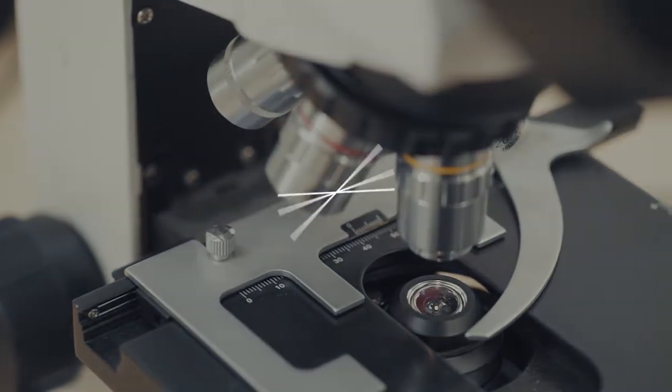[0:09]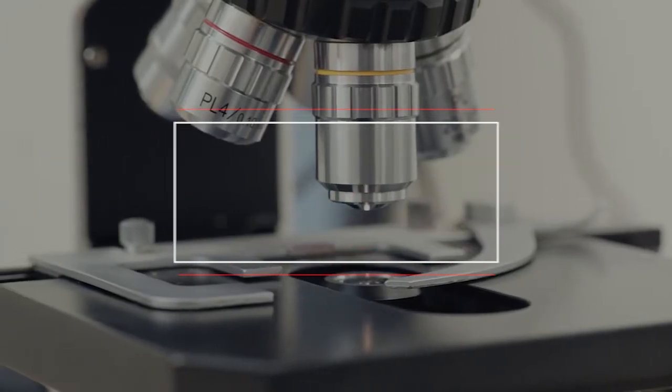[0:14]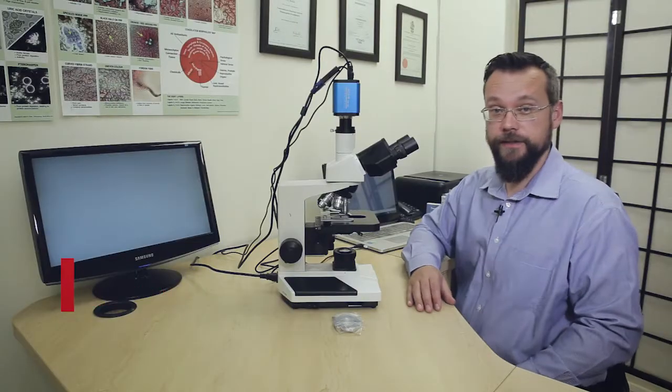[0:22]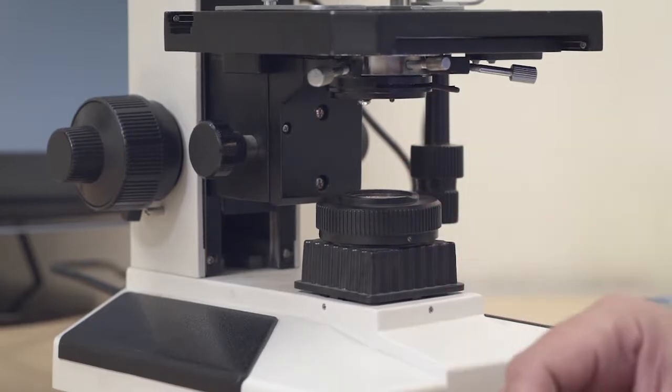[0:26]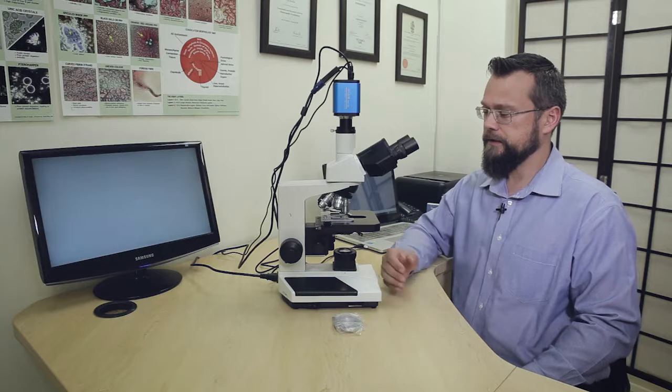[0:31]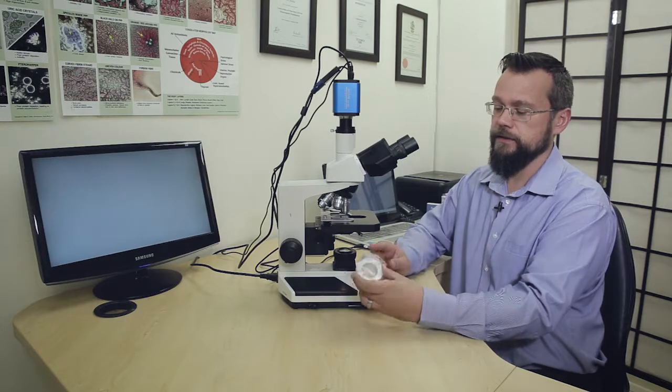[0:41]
Okay, so in this video we're going to look at how to replace the condenser holding ring under the stage of the microscope. Now this is really the only wear and tear item with the microscope. After some time you might notice that the condenser holding screw doesn't hold the condenser in place anymore, and that's usually because the screw is stripped and we usually then replace the condenser holding ring with the screw attached.
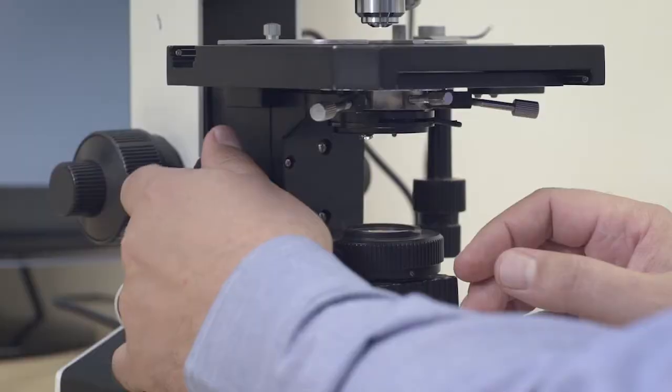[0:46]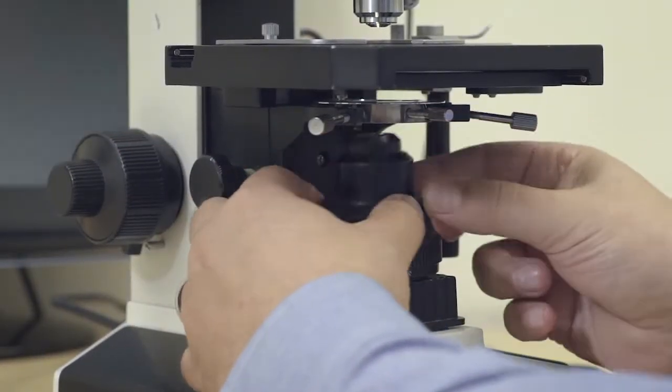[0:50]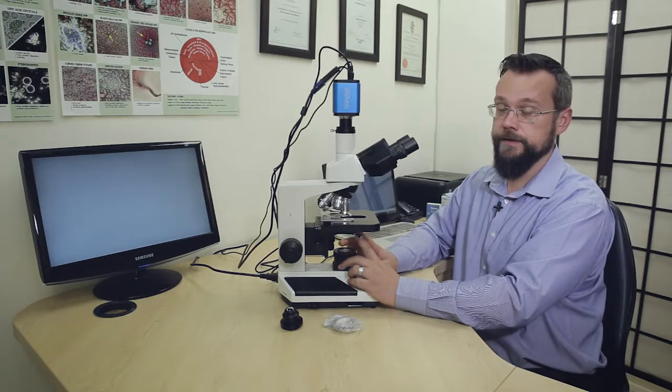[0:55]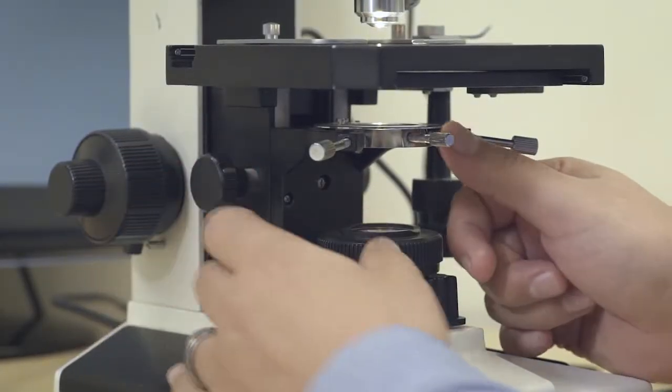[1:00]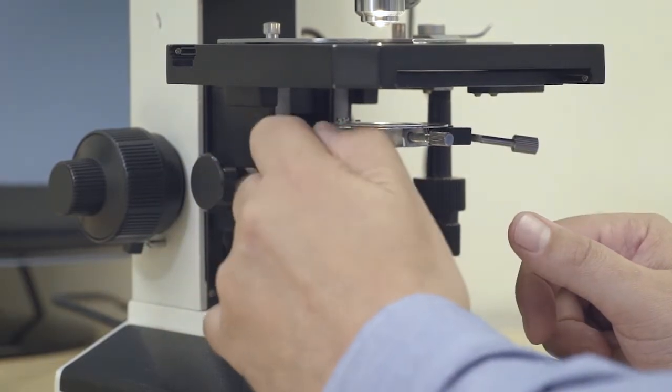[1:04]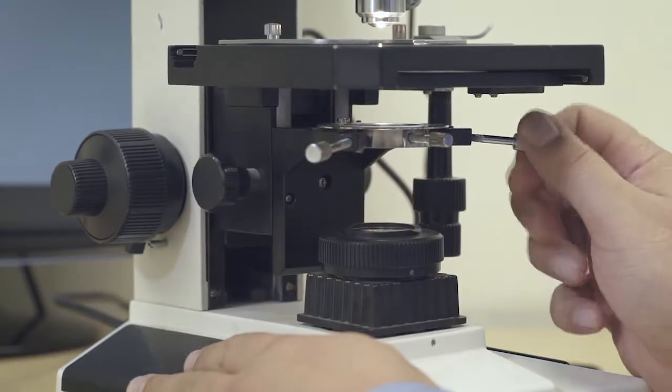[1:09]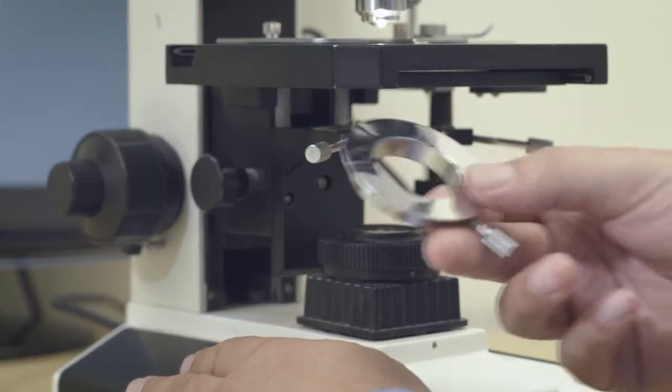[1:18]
Okay, so we're going to just remove the bright field condenser. Alright, and then we're going to remove the entire condenser holding screw here. So let's lower it. So to remove this ring, we need to unscrew the centering knobs. Right, and that will then allow us just to slide this condenser ring out from under the stage.
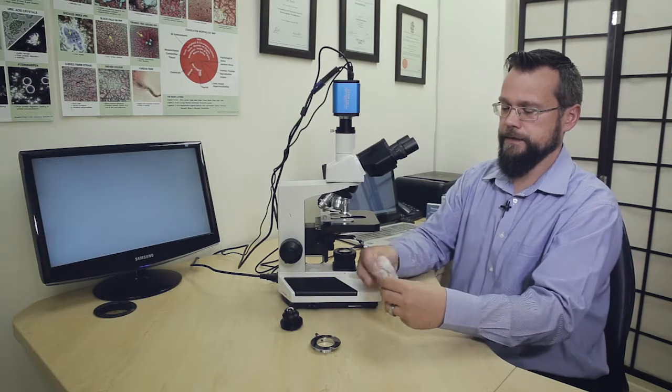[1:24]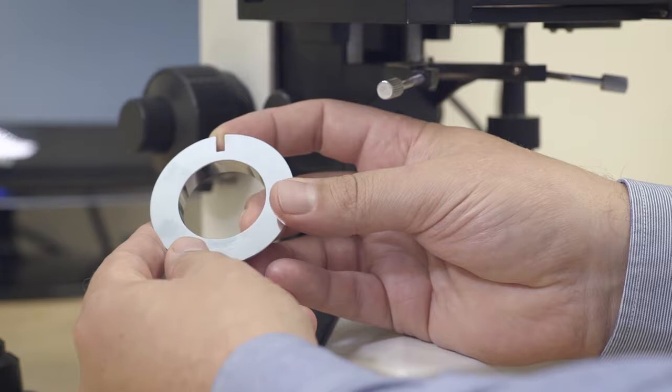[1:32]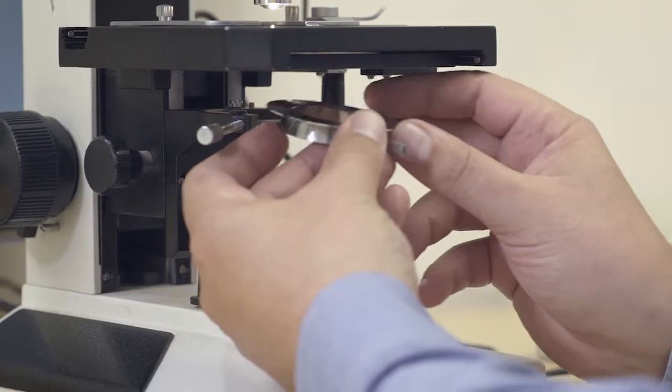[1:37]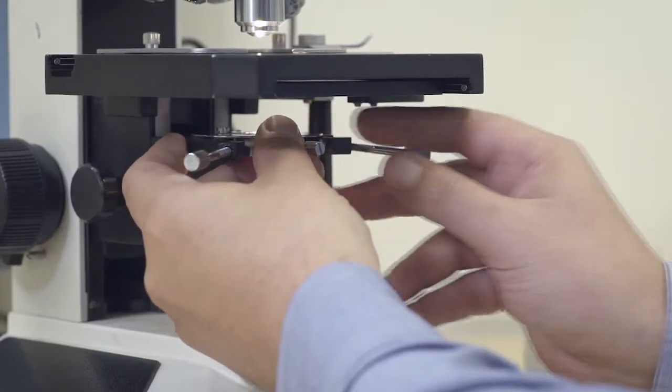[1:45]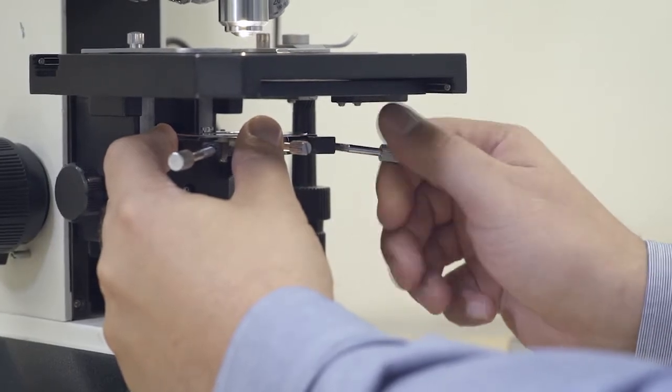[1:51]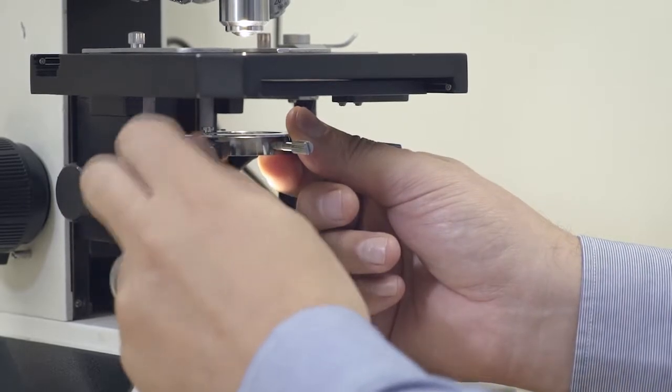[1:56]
Right, so let's get the new one, and that's just going to slide into position on the stage. Now you will notice that there's an area here at the back of this ring that fits into a screw at the back of the unit here. So let's place it into position. That fits into the screw. Okay, push it in against the screw and tighten these condenser centering screws to hold this condenser ring in place under the stage.
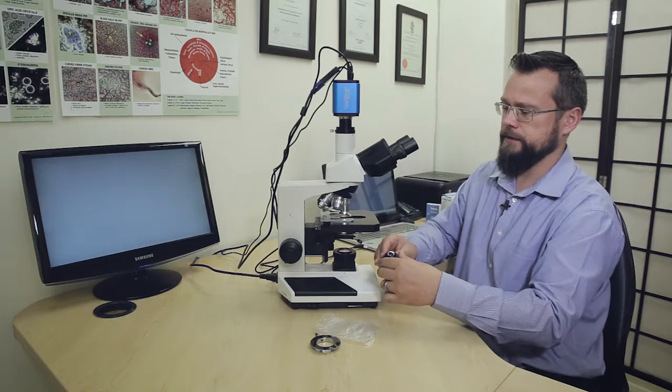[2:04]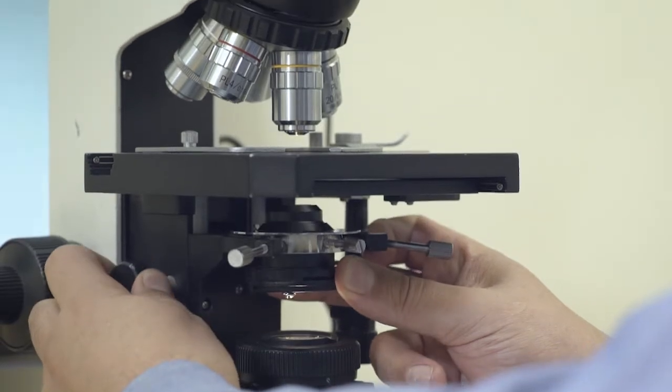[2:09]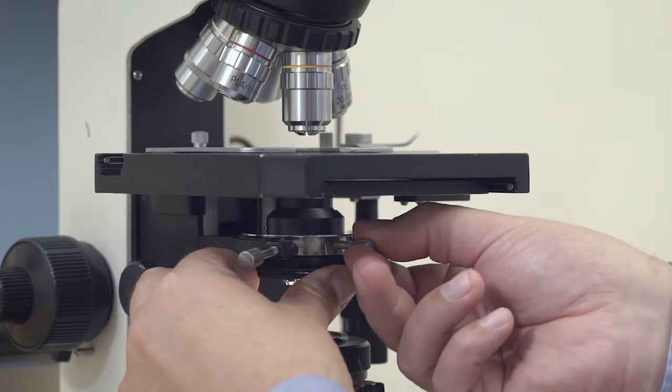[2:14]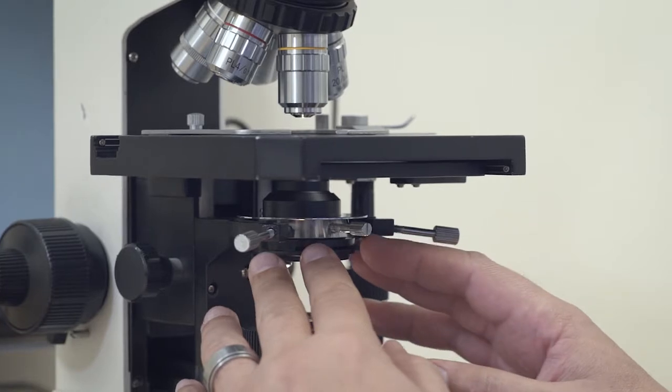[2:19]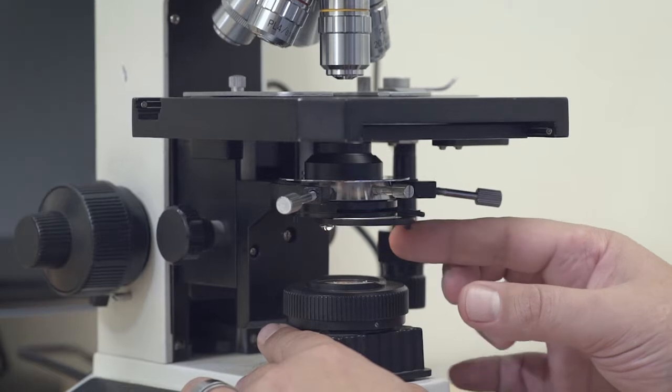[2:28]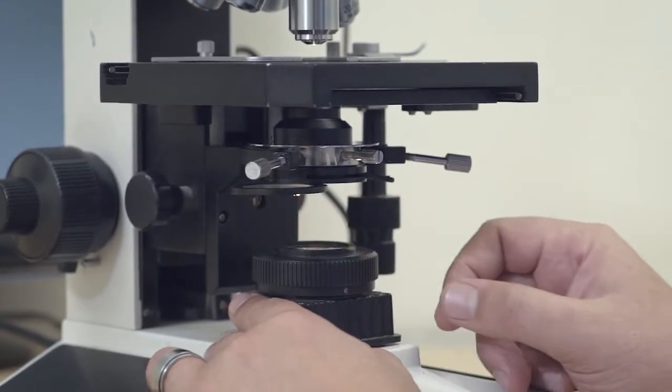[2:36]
All right, that should do it, and then we can place the bright field condenser into position into the new condenser holding ring. Alright, lastly you will need to realign the condenser with the beam of light because we've adjusted these centering screws. So to do that with a bright field condenser, we will need to just move the frosted filter out of position. You won't be able to do it with a frosted filter in position, so it just needs to be pushed out from the beam of light.
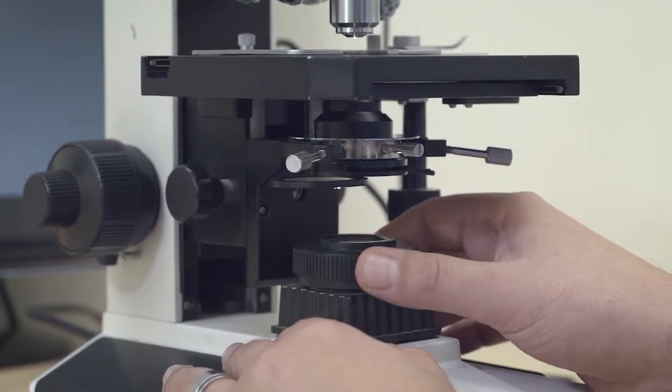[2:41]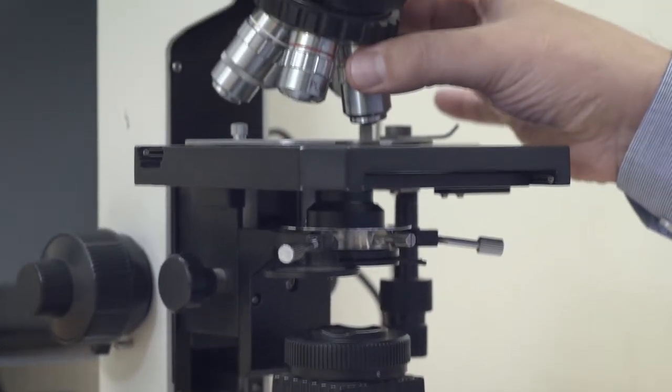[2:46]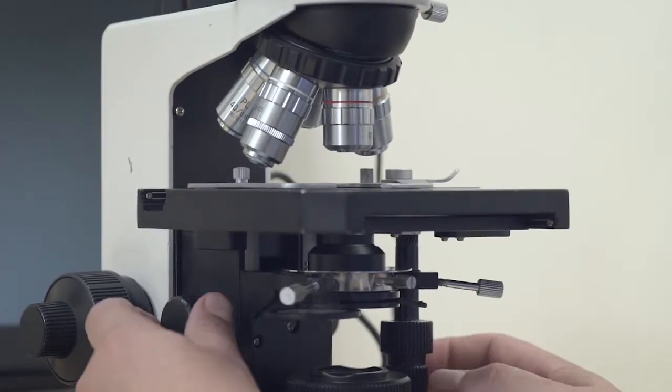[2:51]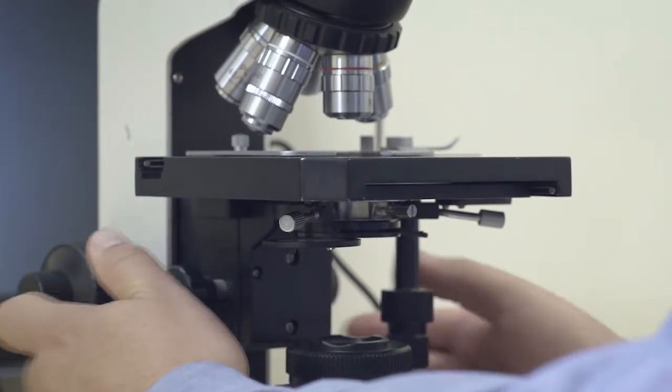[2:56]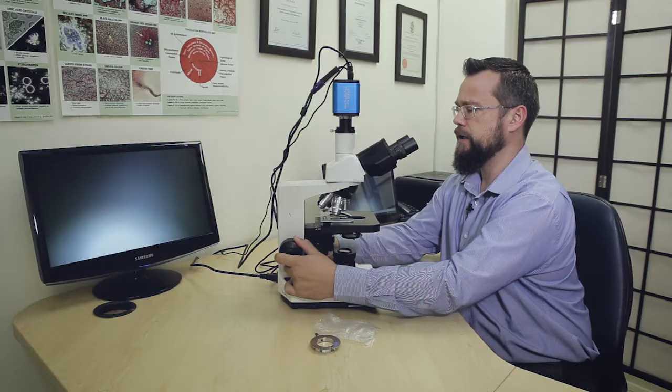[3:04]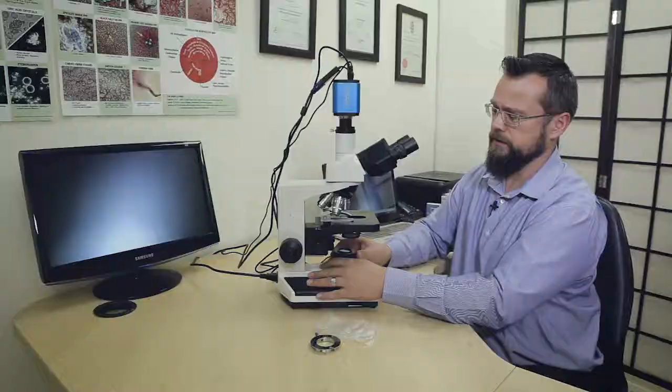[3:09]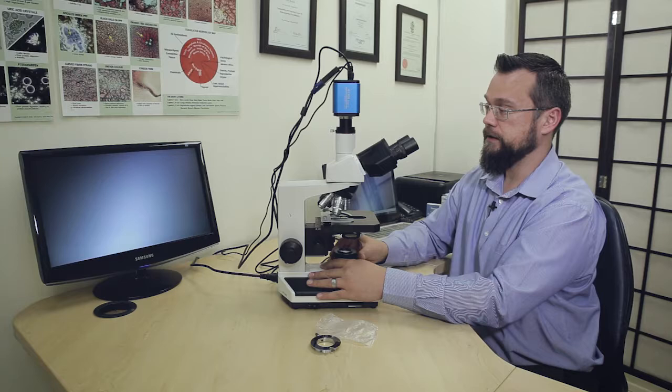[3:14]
And we're going to close the field iris diaphragm at the base of the microscope as well. We're then going to go to the 4x objective, the smallest objective, and then move the condenser up to its highest position. All right, now let's adjust the focus. So at this point you should see a circle of light somewhere in the viewing field. If you don't, you'll probably see it through the eyepieces, or you can just enlarge the circle of light coming through the field iris diaphragm.
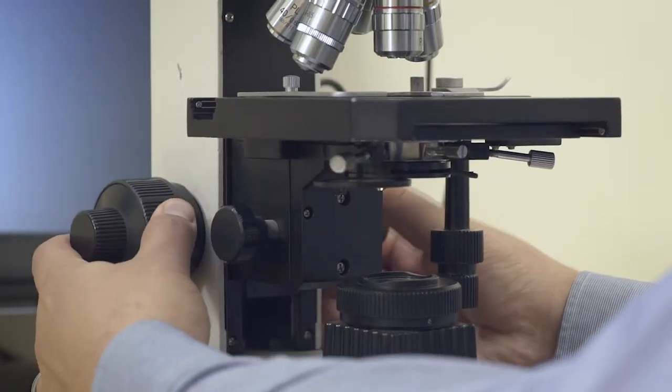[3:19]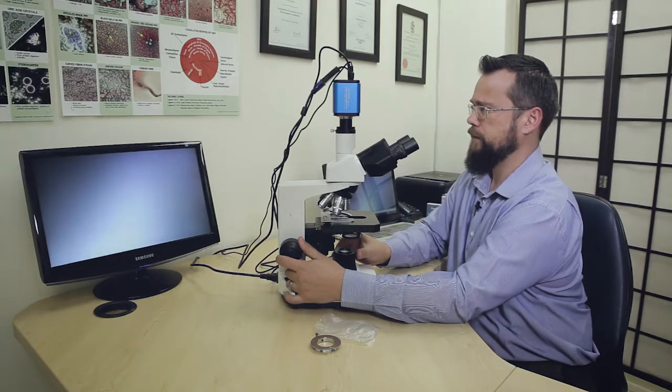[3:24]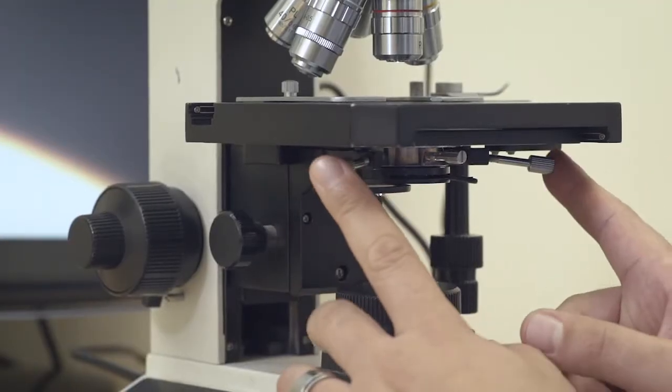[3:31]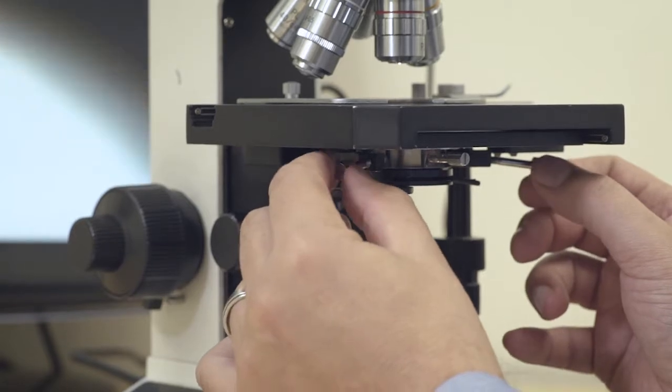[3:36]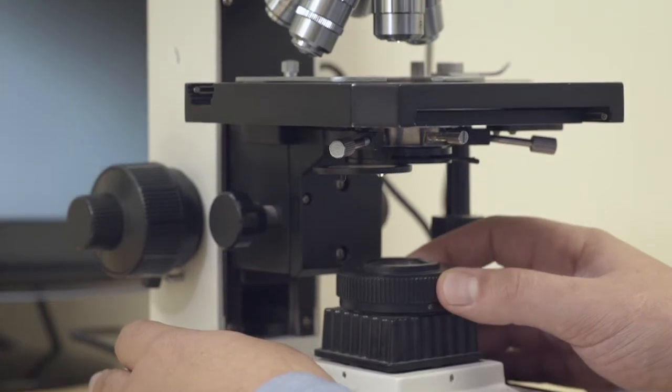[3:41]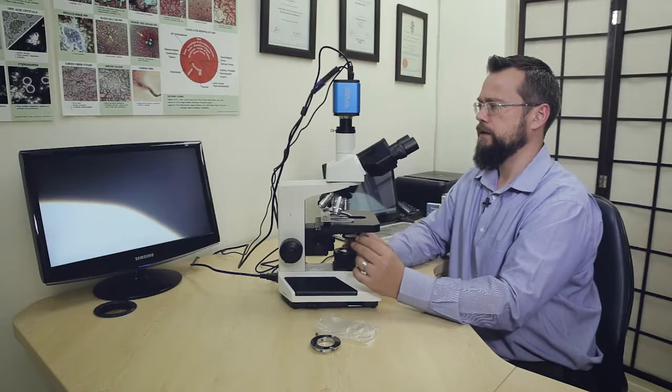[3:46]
So adjust the coarse focus until we can find that circle of light. Open it some more, there we can see the circle coming through there. Okay, so we're going to use the condenser centering knobs there to move this light into the field of view. I'm going to close the field iris diaphragm there again, and then keep moving this into position. Let's close the ring again.
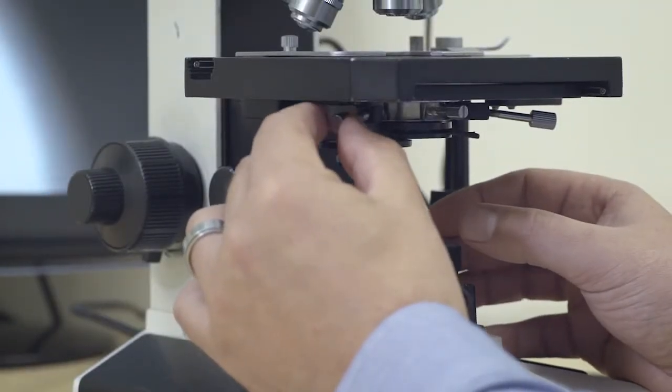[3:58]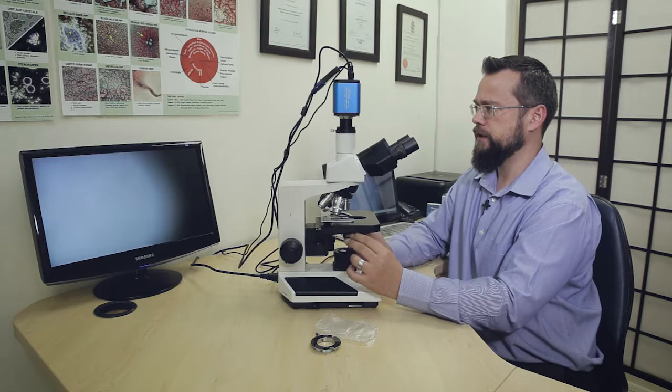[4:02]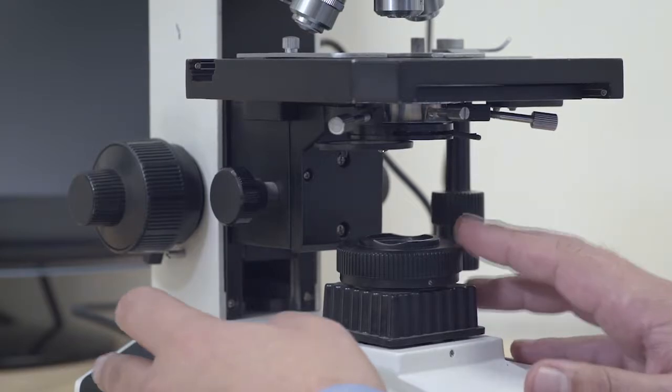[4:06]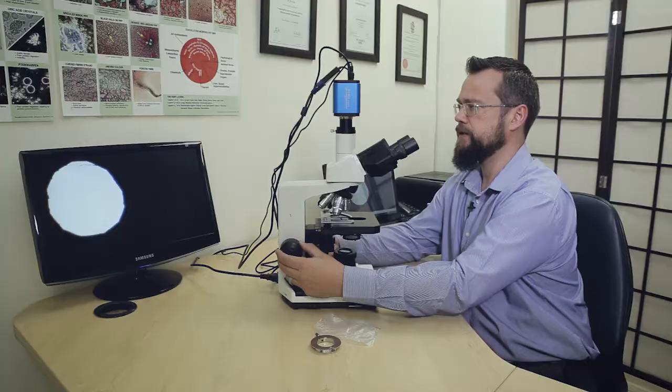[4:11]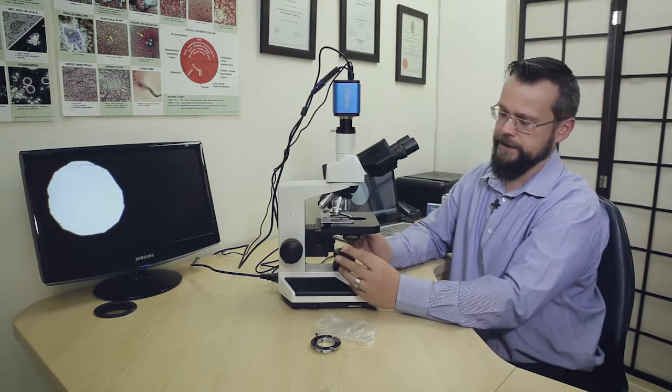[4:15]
So you can see on the screen that we're just slightly off center, so as we close the ring we're just moving the circle of light into the field of view. I've got the field iris diaphragm completely closed now. Just adjusting the focus so you can see the circle of light very clearly in the viewing field there, and we're just going to continue adjusting the centering knobs until that circle of light is in the center of the viewing field.
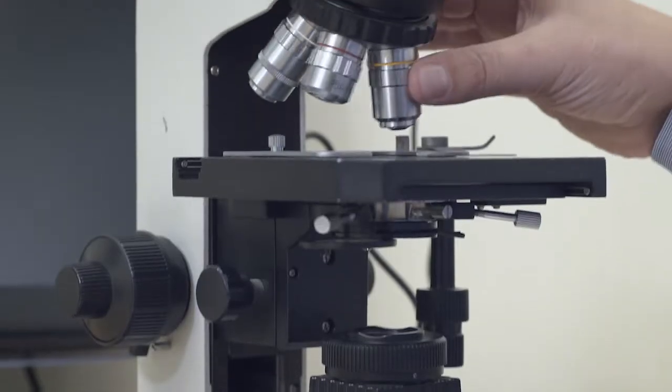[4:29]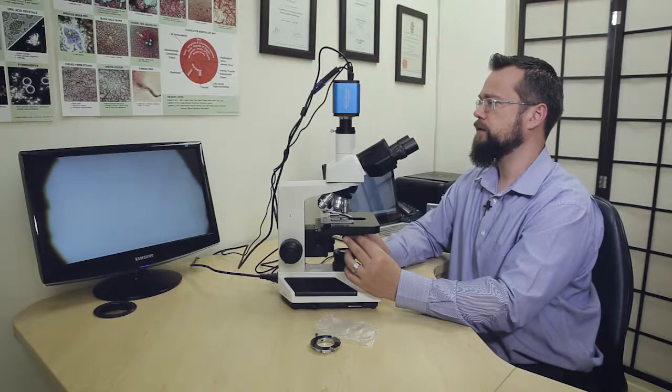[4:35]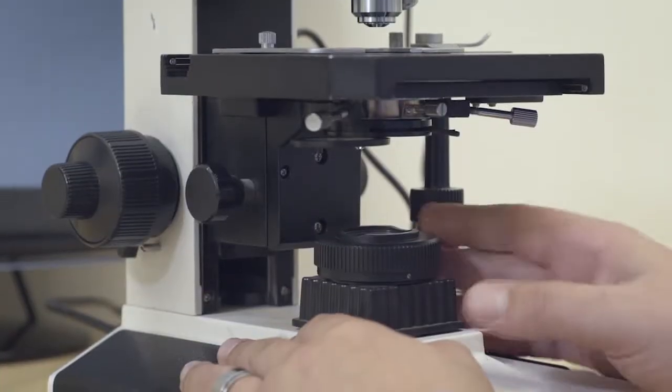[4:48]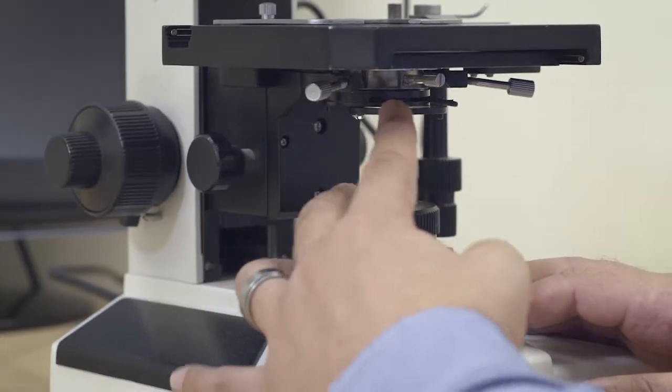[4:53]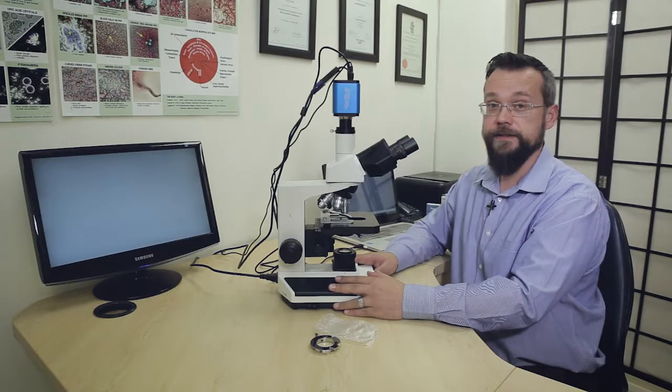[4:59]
And to ensure that it's properly centered, you can increase magnification, going to the 10x objective, and adjust the centering knobs until the circle of light is completely in the middle of the viewing field as we have it there. And then we'll go back to the settings for bright field. So we'll just open the field iris diaphragm 100% again and move the frosted filter back into place under the bright field condenser. And that's it. So the bright field condenser is in place and the condenser holding ring is back under the microscope.